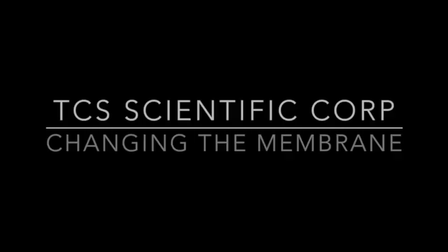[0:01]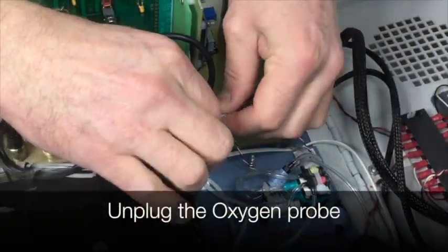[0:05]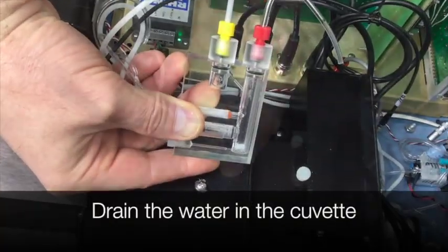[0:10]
Changing the membrane. Open lid. First, unplug the oxygen probe. Lift the cuvette out of the slot. Drain the water in the cuvette.
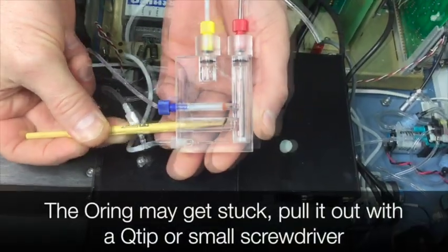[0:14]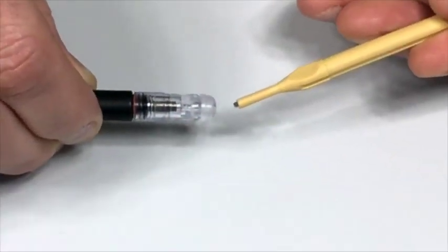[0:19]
Remove the probe. The O-ring may get stuck. Pull it out with a Q-tip or a small screwdriver. Never touch the tip of the membrane. Unscrew the membrane from the probe.
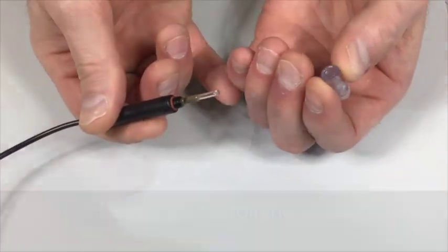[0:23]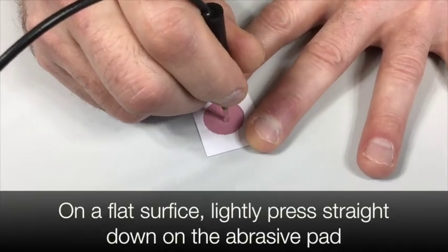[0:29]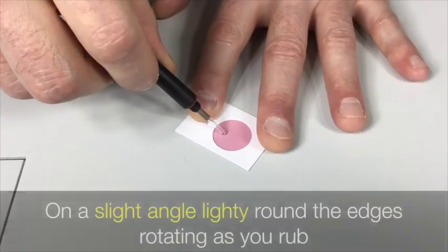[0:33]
Thoroughly dry off the probe. On a flat surface, lightly press down on the abrasive pad. Rub in a circular motion, letting the abrasive do most of the work. On a slight angle, lightly round the edges, rotating as you rub.
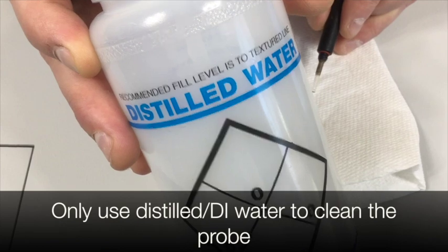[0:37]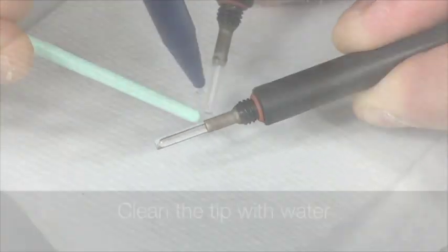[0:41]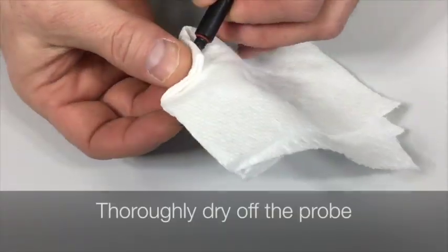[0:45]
Only use distilled or DI water to clean the probe. Never get water in this area. Clean the tip with water. Thoroughly dry off the probe.
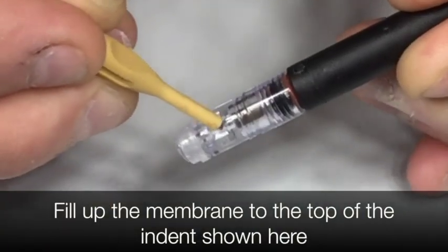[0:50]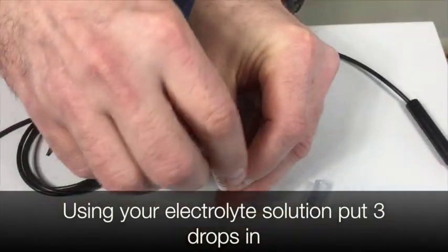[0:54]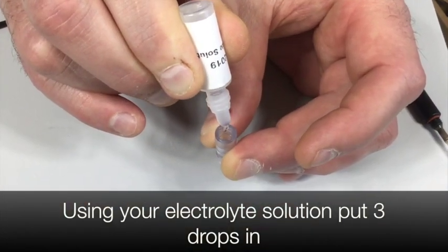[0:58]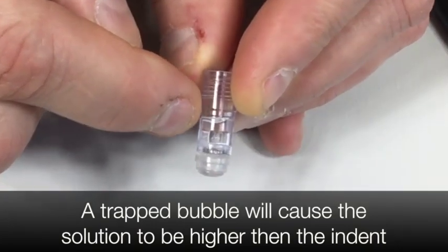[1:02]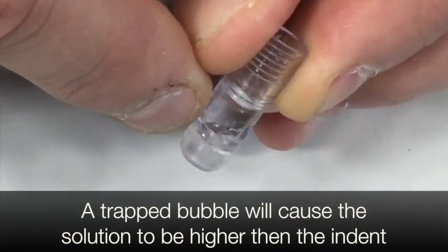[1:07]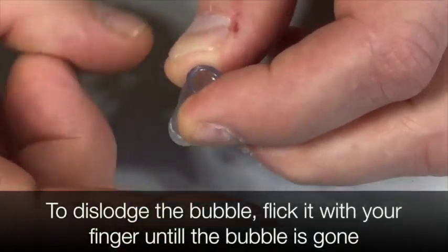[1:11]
Fill up the membrane to the top of the indent shown here. Using your electrolyte solution, put 3 drops in. A trapped bubble will cause the solution to be higher than the indent. The best way to dislodge the bubble is to flick it with your finger until the bubble is gone.
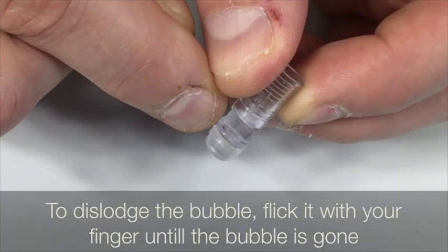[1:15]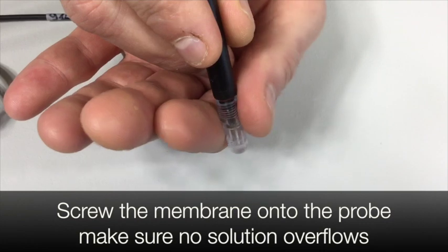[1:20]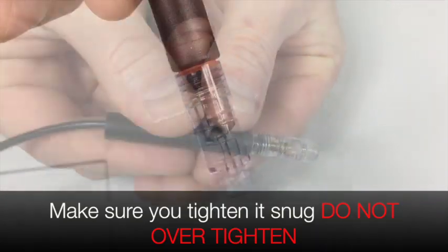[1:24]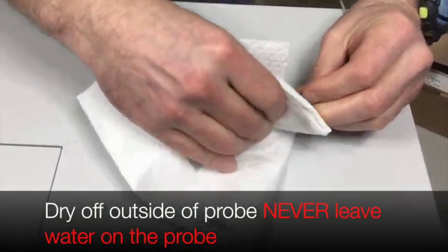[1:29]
Slowly insert the probe, making sure that there are no air bubbles on the tip. Screw the membrane onto the probe and make sure the solution does not overflow. Make sure you tighten it snug. Do not over-tighten. Dry off the probe. Never leave water on the probe.
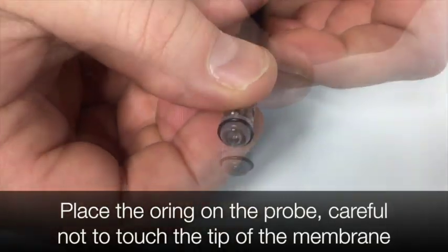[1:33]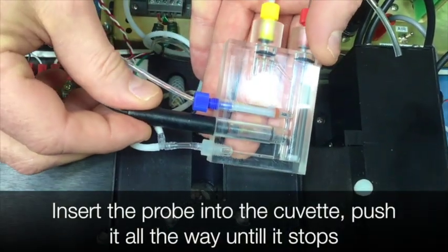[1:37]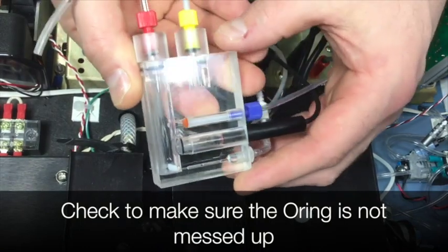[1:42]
Place the O-ring on the probe. Careful not to touch the tip of the membrane. Insert the probe into the cuvette. Push it all the way until it stops. Check to make sure the O-ring is not messed up.
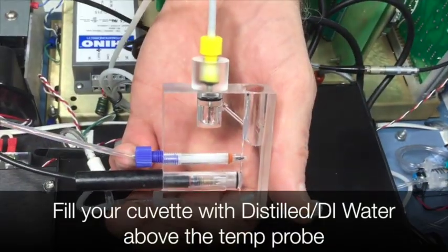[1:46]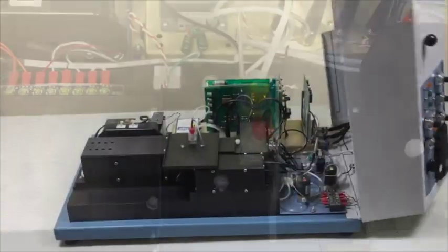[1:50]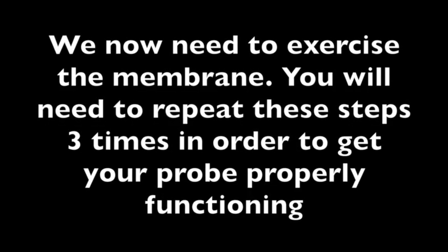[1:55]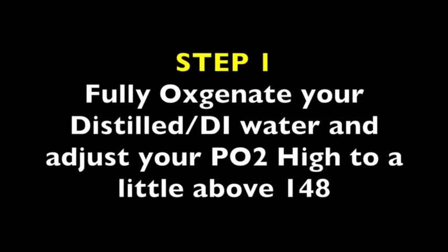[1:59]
Fill your cuvette with distilled water above the temperature probe. Put the cuvette back in the HEMOX. Close lid. We now need to exercise the membrane. You will need to repeat these steps 3 times in order to get your probe to function properly. Step 1. Fully oxygenate your distilled or DI water and adjust your PO2 high to a little above 148.
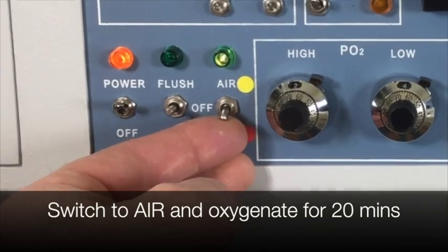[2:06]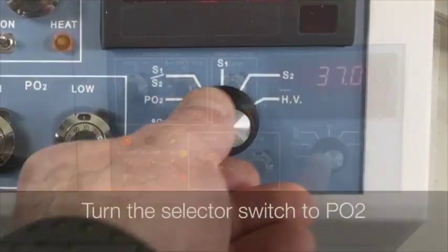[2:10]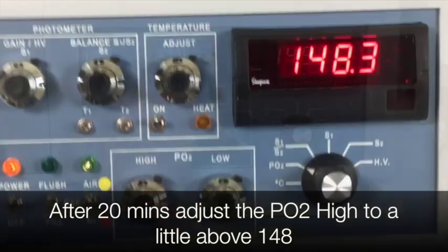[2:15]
Switch to air and oxygenate for 20 minutes. While you're waiting, make sure the temperature gets to 37 degrees Celsius. Turn the selector switch to PO2. After 20 minutes, adjust the PO2 high to a little above 148.
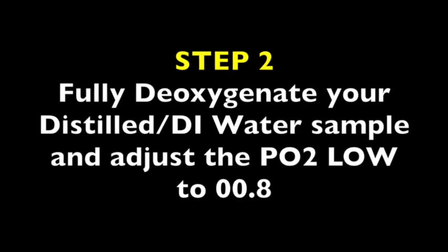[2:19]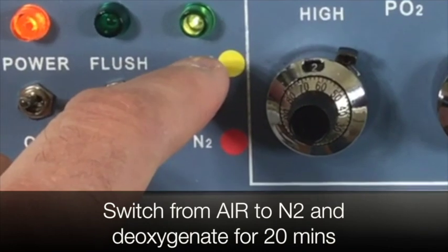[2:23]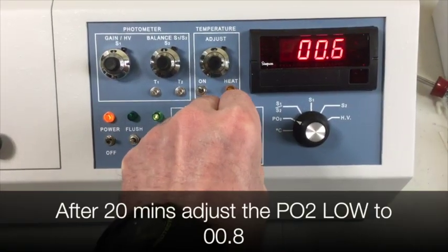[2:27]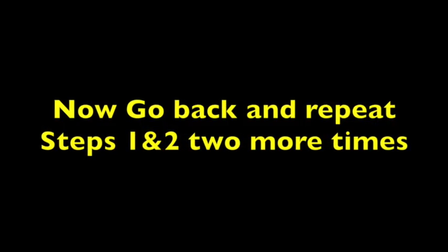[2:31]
Step 2. Fully deoxygenate your distilled or DI water sample and adjust the PO2 low to 0.8. Switch from air to nitrogen and deoxygenate for 20 minutes. After 20 minutes, adjust the PO2 low to 0.8. Now go back and repeat steps 1 and 2 2 more times.
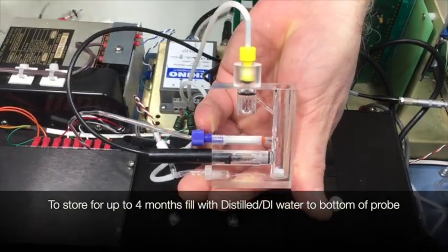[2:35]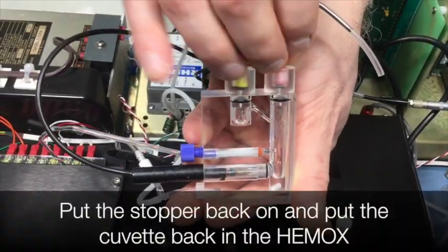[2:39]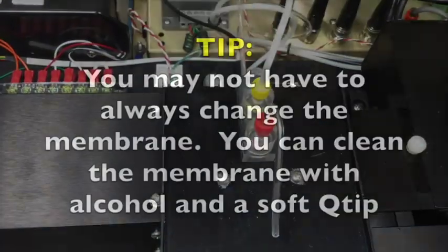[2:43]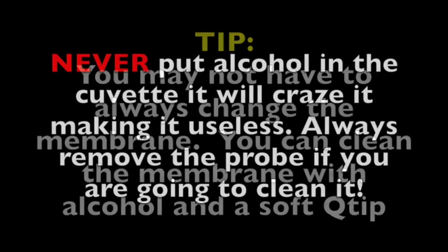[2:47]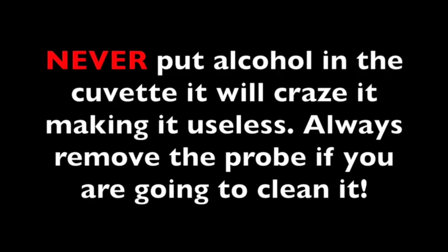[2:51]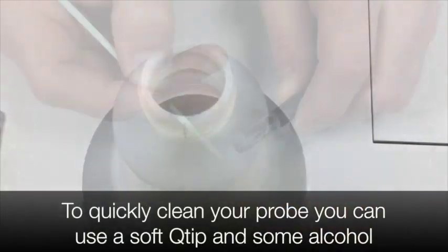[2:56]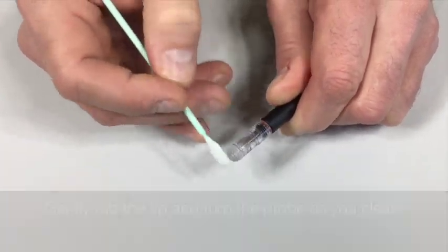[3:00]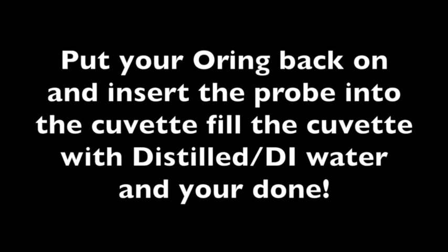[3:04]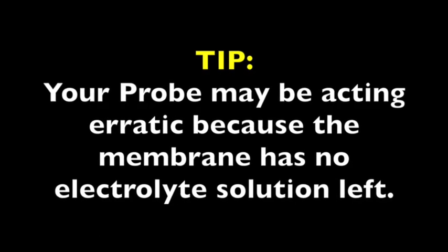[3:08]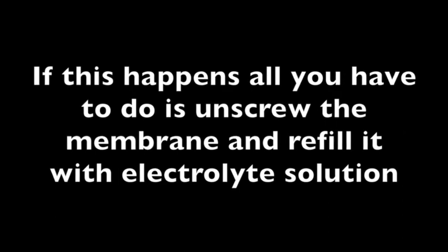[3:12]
To quickly clean your probe, you can use a soft Q-tip and some alcohol. Gently rub the tip and turn the probe as you clean. Put your O-ring back on, insert the probe into the cuvette, fill the cuvette with distilled or DI water, and you're done. Your probe may be acting erratic because the membrane has no electrolyte solution left in it. If this happens, all you have to do is unscrew the membrane and refill it with electrolyte solution.